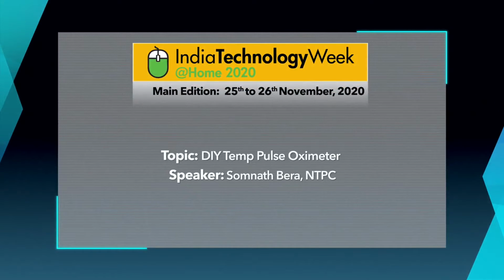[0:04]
This is a profoundly important project for all of us during this pandemic time. You can build it on your own and you can deploy it. That way it is very important. Otherwise, it's a very small project. Once you understand the intricacies of it, you will be able to do it.
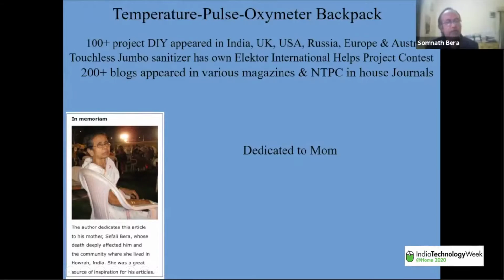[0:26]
Well, this is a temperature pulse oximeter. Normally, the oximeters you find in the market are available for around 1500 to 2000 INR. But actually, it costs far less than that. And how it works is also very important to understand.
Well, I am S. Bera. I have more than 100 DIY projects appeared in India and other countries like UK, USA, Russia, Europe, and Australia. And before that, one more project, a jumbo sanitizer, also appeared in many places. I am also a blog writer. I have written more than 200 blogs, appeared in various magazines, newspapers, and some of my company in-house journals. Well, friends, I dedicate this to my dear mom.
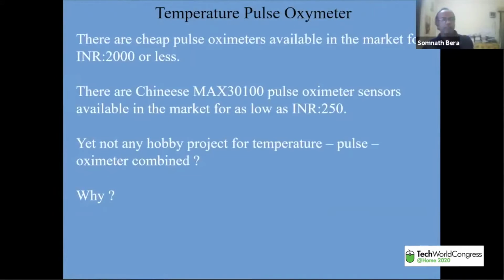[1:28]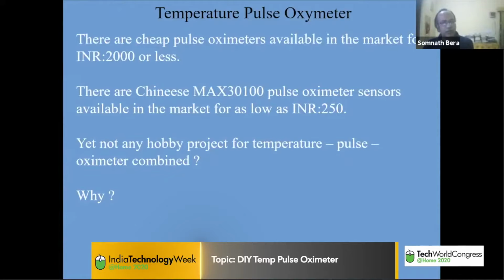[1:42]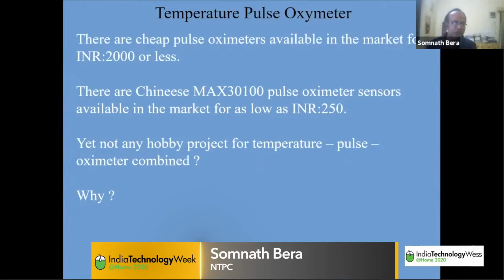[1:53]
Well, there are a lot of cheap oximeters available in the market for INR 2000 or less. And these are built on Chinese MAX 30100 or 102 pulse oximeter sensors. Those are available from Indian suppliers for as low as INR 250. Yet there is no hobby project for a combined temperature and pulse oximeter. You see those meters, they grip your finger. They can easily measure temperature, but they don't. They measure only your oxygen level and your pulse level.
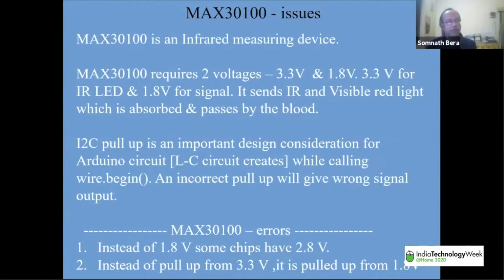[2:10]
MAX 30100 is an infrared measuring device. To be precise, along with infrared, it also emits a red light. Oxygenated blood absorbs more IR light and passes the red light, whereas deoxygenated blood absorbs more red light and passes infrared light. So the sensor sends an IR light and a red light, and measures back the reflected energy level. That's the measurement of the oxygen level of your blood. And the pulses, between oxygenation and deoxygenation, are the measurement of your pulse. So you tell your computer to count all those gaps and it will do it like a dedicated slave, and that's the project.
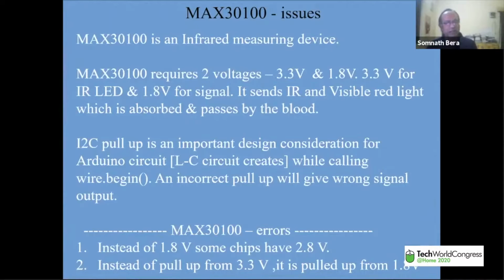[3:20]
Well, for the MCU, this is an I2C device. And for an I2C device, there is an important design consideration for pull-up. It creates an LC circuit, an inductance and capacitance resonance circuit, which actually helps the I2C to work properly. This comes into being when you start Wire.begin in the Arduino, and it starts working that way. An incorrect pull-up will give a wrong signal output.
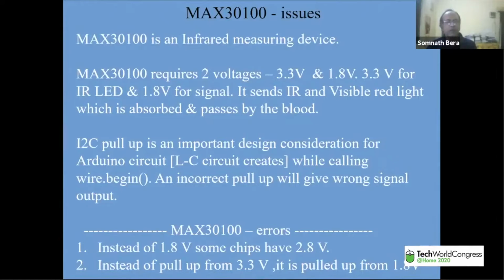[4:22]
Now, these MAX 30100 sensors are all flooded in the market. They have some distinct errors, and that's why you will not be able to make your oximeter work perfectly. For the MAX 30100 to work perfectly, two voltages are required: 3.3 volt for lighting the IR LED and the normal red LED, and 1.8 volt for the signal. For measurement of that feeble weak signal, 1.8 volt is used. If you use more voltage, it will create so much noise that the measurement will be problematic. So these two voltages are required.
But now the thing is that for this machine to work with a popular I2C model, you need a pull-up from 3.3 volt if the machine operates at 3.3 volt, or from 5 volt if it operates from 5 volt. And the problem lies there.
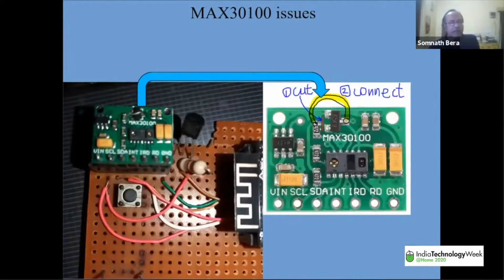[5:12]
This MAX 30100, these Chinese made machines, see, it's an I2C design. There are VIN, SCL, SDA, and one interrupter, IRD, RD, and GND. IRD and RD are the LEDs. But the problem is that the interrupter you have not used. SCL, SDA and the interrupter all three have pull-up resistors. And if you see the right picture clearly, those are three pull-up resistors, and those three are connected to 1.8 volt. So probably the Chinese makers made this design for a particular MCU, which we really don't know. But they have flooded the market with this cheap sensor.
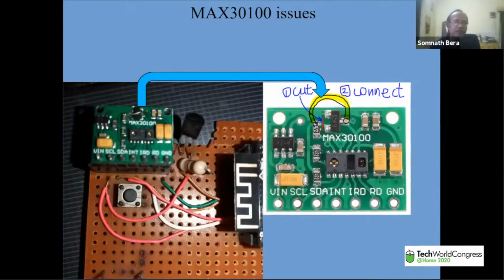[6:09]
So as a result, what happens? We end up buying these sensors and we do not know which sensor works perfectly. We try to do it with Arduino and we find that we are not getting the proper results. And one more problem is there. Some of the Chinese models have two regulators. One is a 6-pin regulator, that is a VIN to 5 volt, and this 3-pin 65K9 is a 1.8 volt regulator. Some of the Chinese designers, instead of 1.8 volt, have put in a 2.8 volt.
So with the 2.8 volt regulator, where the 2.8 volt is used as a sensor design, control, sensor measurement, I really don't know how the two voltages, that 5 volt and 1.8 volt, this point is measuring 1.8 volt, or the top of this resistor is measuring 1.8 volt. Then anyway, one way this is all right.
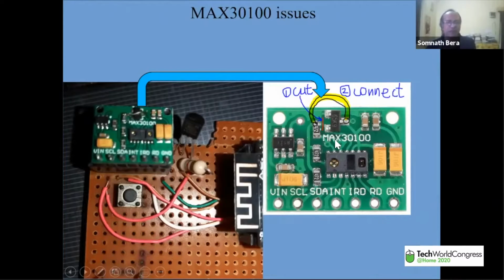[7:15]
Now we have to do some rigging work here. What you have to do, either you remove all these three resistors and put three new 4.7K resistors to the 3.3 volt pull up, or you cut this small line here. That cut is written there. You cut that line here and put a jump wire here.
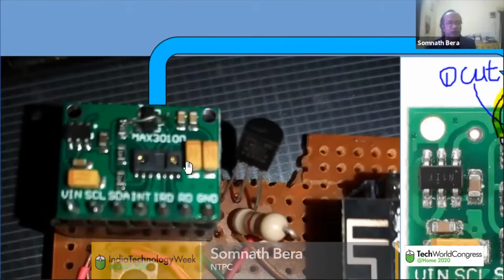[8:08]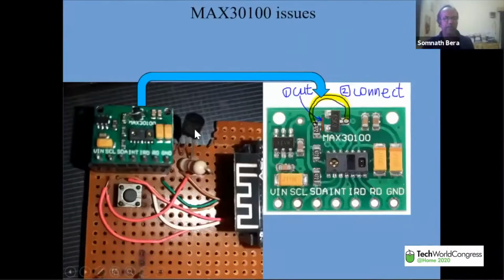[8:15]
This is the jump wire from the top of this resistor up to the opposite middle line of this 1.8 volt regulator. If you see closely here, I did exactly the same thing, from the top of this resistor, which is the common pull-up, going to 1.8 volt. I cut the track below and connected it here. And this is the jump wire I have used. If you do it now, it is absolutely all right to give you correct reading.
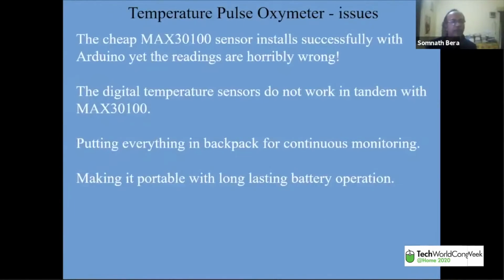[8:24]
Ignore this push button. This is not a part of this project. And if you do not do this rigging, then what will happen? You will find that the sensor is installed successfully. It is diagnosed by Arduino successfully. Yet the readings are horribly wrong. If you cross-check with a pulse oximeter, you will find that readings are horribly wrong, yet the Arduino is working perfectly all right. That's one point.
If you connect a digital temperature sensor to another GPIO of your microprocessor, it will not work in tandem with MAX30100. That is another problem.
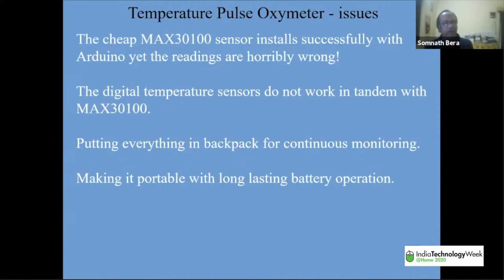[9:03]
Now, third thing, we did this project for some of our high-skilled operators who came from outside, and after a test checking, after being negative, they were deployed for work. And there we thought of putting this backpack on their wrist so that we'll be able to continuously monitor their oxygen and pulse and temperature. And again, the next challenge was making it portable with long-lasting battery operation. So we have addressed all those points.
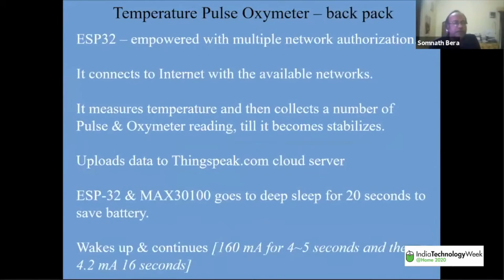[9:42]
Let's see. One is that for a microprocessor, we used ESP32. ESP32 is a 160 megahertz dual core, yet one of the cheapest and very powerful microprocessors available in the market. It is available for as low as 500 rupees nowadays. And in the international market, we will get it for $4 to $5.
We have provided multiple networks, as many as you can provide with ID and password to the sketch, and it will try all those networks, and whichever is first, on a first come first serve basis, it will get connected. And we have also provided a lot of checks there. If the network is connected but is not able to transfer data from the buffer to the internet, then again it will go and try for the next network. So a lot of built-in intelligence is provided there.
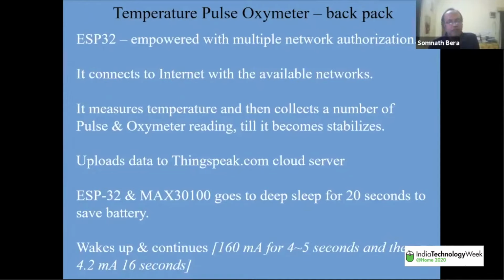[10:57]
It measures temperature and then collects a number of pulse and oximeter readings till it stabilizes. In rapid succession, it will take 20 readings, and when the readings are stabilized and you find that it is at par with an oximeter reading, then it will upload data to thingspeak.com cloud server. Nowadays, creating an account in ThingSpeak and uploading data is very easy. You can do it jolly well.
Only thing, when you open an account, you will get a write key, permission to write data into ThingSpeak via a key. You have to note down that key and deliver that key in the Arduino sketch. Then you are done. Data will continuously be uploaded to your thingspeak.com web page, your personalized web page, and you will be able to create a lot of trending and everything.
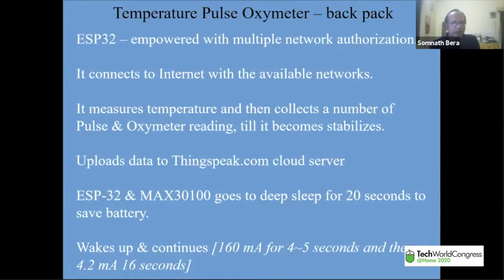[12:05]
You can do it. Well, after uploading data to ThingSpeak, ESP32 and MAX30100 go to deep sleep mode for 20 seconds to save battery. After that, the ESP32 wakes up again and continues. During this entire life cycle, it takes 160 milliampere current on 3.3 volt for 4 to 5 seconds to upload data.
And then it goes back to 4.2 milliampere for 16 seconds. So that's how it works, and it saves a lot of power on a 18650 battery. On a 18650 battery, which looks like this, it runs for at least 1 week. It will run comfortably, if not 2-3 weeks.
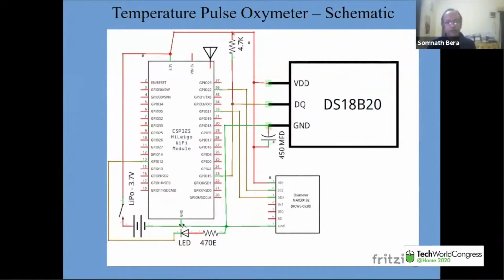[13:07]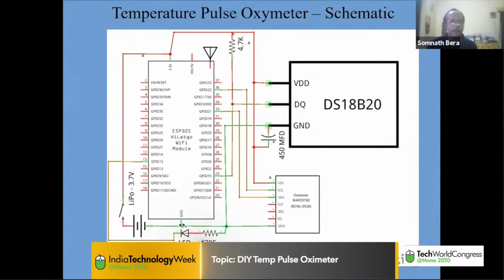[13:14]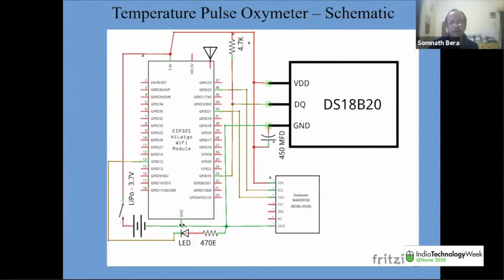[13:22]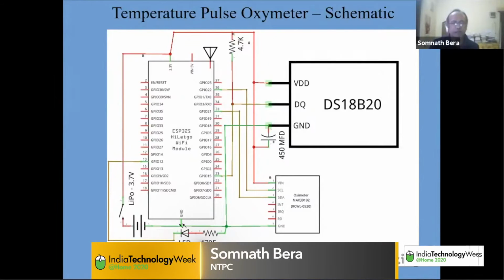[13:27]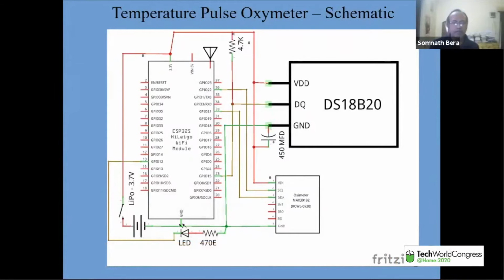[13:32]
This is the schematic I have drawn for you. It's a very simple schematic. The DS18B20 is the digital temperature sensor. This is a Dallas semiconductor. It's very precise. You can set it to measure temperature up to 4 decimals. Yes, I repeat, 4 decimals. Up to 4 decimals, you can take correct readings from minus 50 degrees to 150 degrees centigrade. A very wide, versatile digital temperature sensor. It measures data, then it
ESP32 connects to internet, and then ESP32 reads the oximeter data. All these pins are not used at all. Only SCL, SDA, VIN and GND, these 4 pins are used. And after successfully uploading the data, this LED will blink for a moment, indicating that the data has been uploaded. And then you can see the data is continuously being stacked up in your thingspeak.com web page.
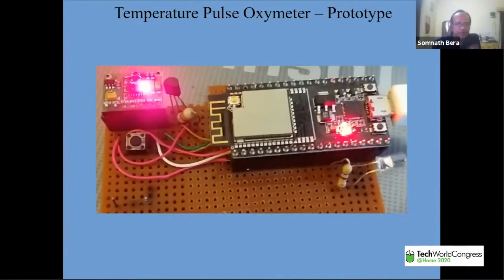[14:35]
Well, this is the prototype. The battery will be placed on the front gap portion, and the temperature probe and the pulse oximeter sensor MAX30100 are placed side by side. When you place your finger or your wrist onto it, it will measure both. It will put them in a comma separated value string, and then it will upload to thingspeak.com in one go. In one go, it will pump all those data into the cloud server.
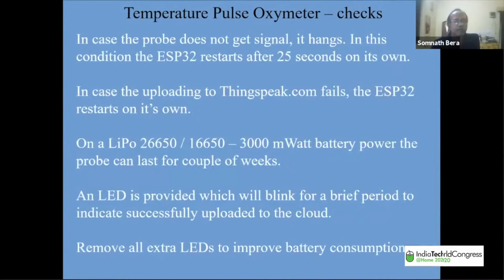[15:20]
So these are the checks, because the thing completely happens behind your back, in the attached probe, and you cannot monitor it perfectly every time. So we have provided a few checks there. One is that in case the probe does not get an internet signal, Wi-Fi signal. It will happen. If you have a campus Wi-Fi, it will work very well. We have a campus Wi-Fi here, so everywhere it finds internet connectivity. So in case the probe does not get signal, it hangs. In this condition, the ESP32 will start counting, and after 25 seconds, it will restart on its own, and it will try the next. In case the uploading to thingspeak.com fails, the ESP32 will restart on its own.
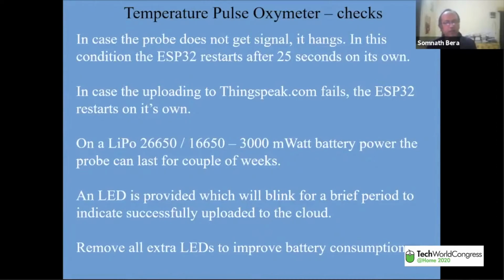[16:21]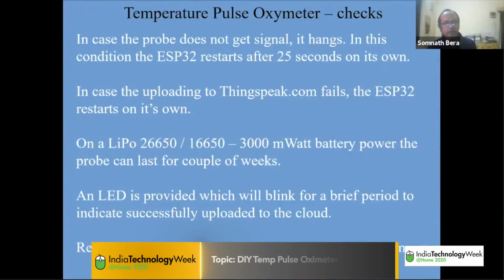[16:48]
Uploading to ThingSpeak is nothing like you open the ThingSpeak server and you write that line in the browser page itself with that write key put in between. And if you press that enter button, the data will go to ThingSpeak. Exactly the same thing is done inside the ESP32. So in case it fails, it finds that internet is not working, whatsoever it is, it will restart again.
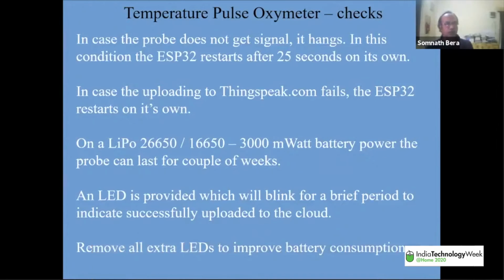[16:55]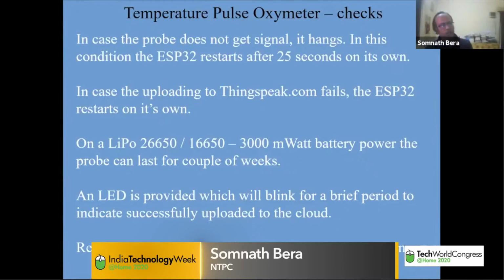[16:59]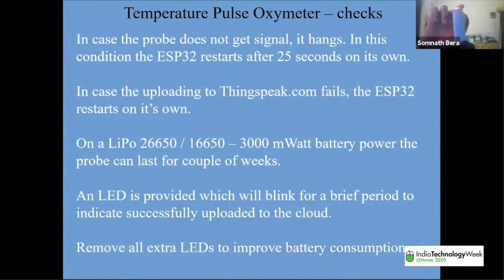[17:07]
So on a LiPo 26650 or 16650, it will work for weeks. 16650 is a bigger battery. It looks like this. This is slightly bigger and thicker. It will work for weeks after weeks on this battery. It is very big, very thick. It is a 4 ampere hour battery. An LED is provided which will blink for a brief period to indicate successful upload to
the cloud. And you can reduce the power consumption further by removing the extra LED that glows continuously on the ESP32 development board. If you use a bare minimum ESP32, you can reduce the power consumption further. That was about that project, the schematics, and those things. And before coming to the question session, I will show you a little bit of the sketch.
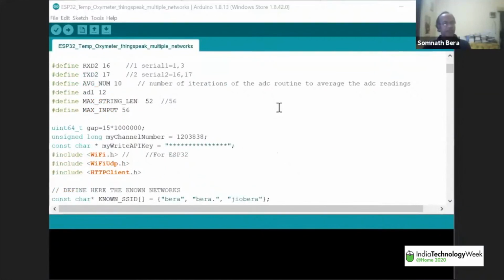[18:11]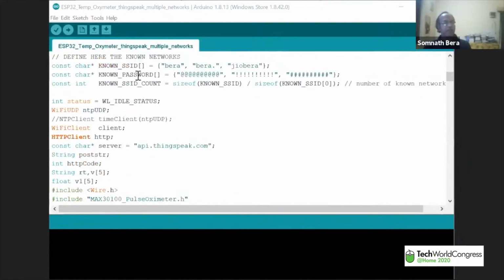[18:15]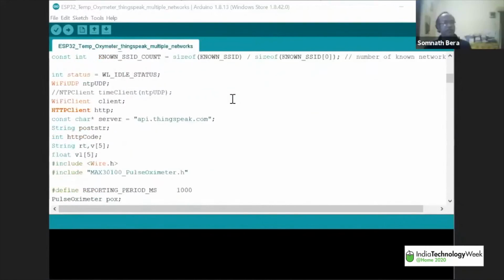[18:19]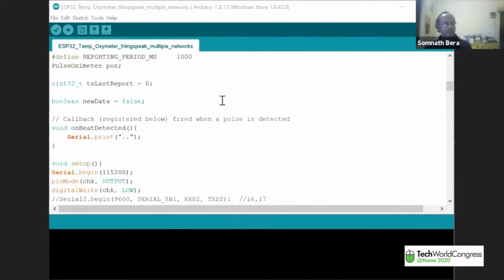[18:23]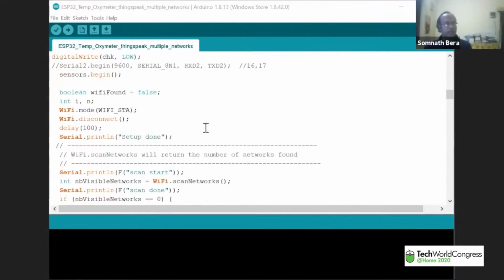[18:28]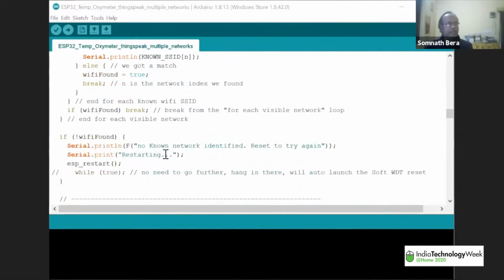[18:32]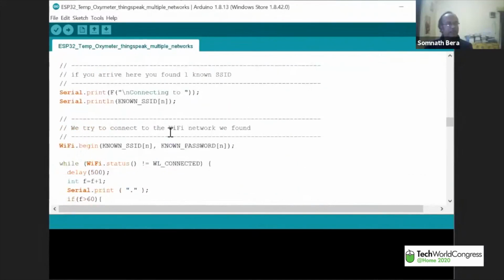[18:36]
Well, this is the sketch. If you can see it here, I have provided a number of ID passwords. So all these ID passwords, it will connect one after another. And if it fails at any point of time, it will restart. And these are the restart commands. These are again one more restart command.
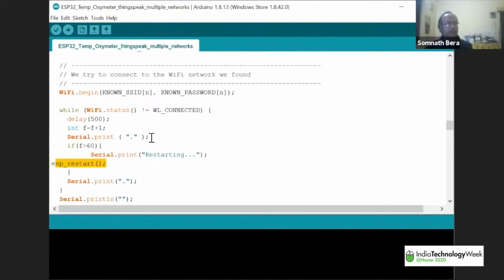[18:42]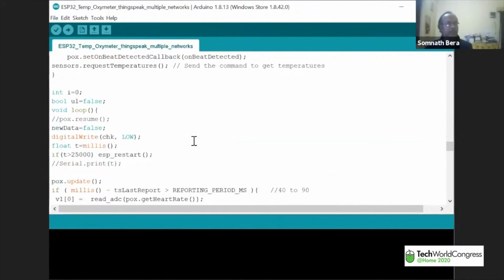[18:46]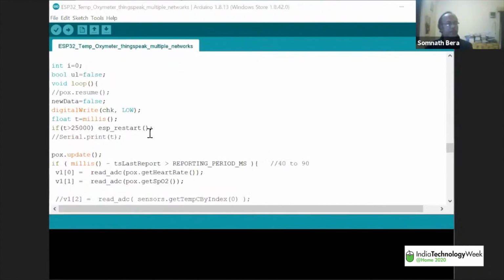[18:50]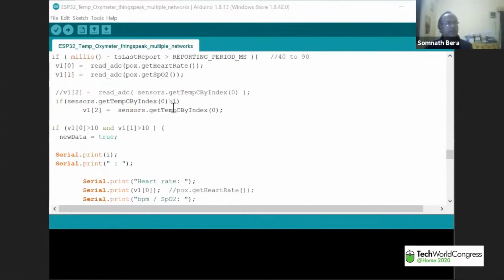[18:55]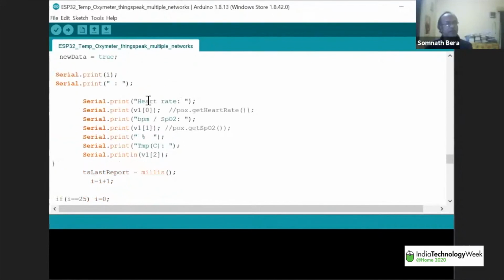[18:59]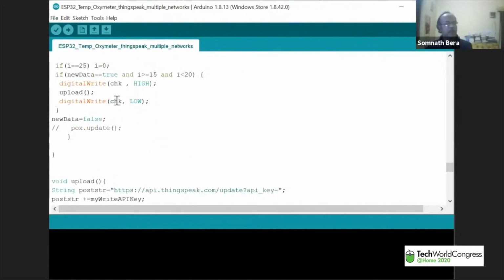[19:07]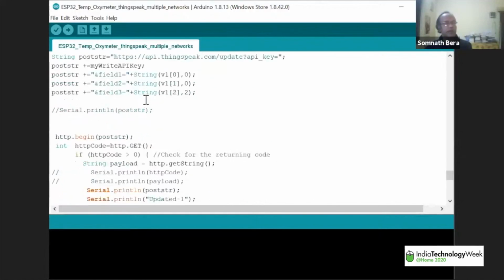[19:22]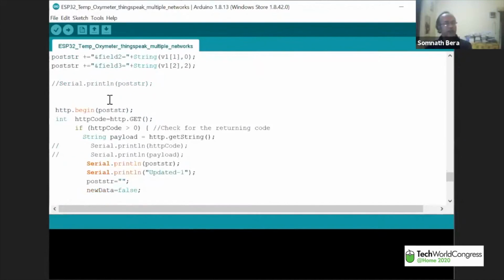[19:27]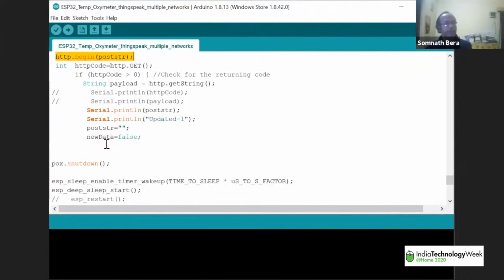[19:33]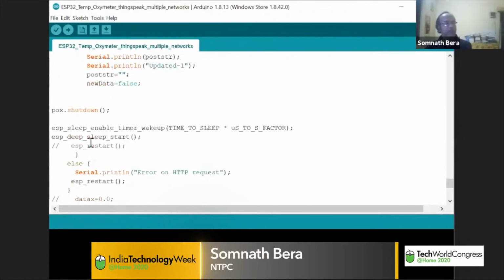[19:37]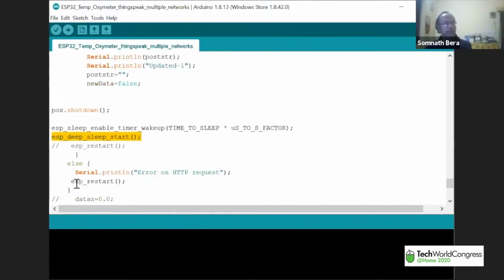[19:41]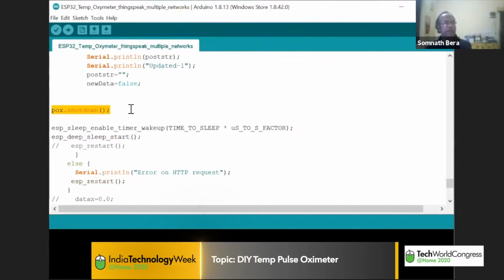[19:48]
And in the loop section, it measures the temperature first, then it does the oxygen and pulse measurement. It goes to the serial pin, but we are not having any serial pin connected in the actual field usage. And this uploads data. When 15 to 20 data points are collected, then it uploads. This is the upload command, and upload is here. It takes all the data at a time and pumps it to ThingSpeak. And if ThingSpeak does not respond properly, it will restart again. Here is the deep sleep, and if it fails to connect, it will restart again. And this is the deep sleep mode of our pulse oximeter.